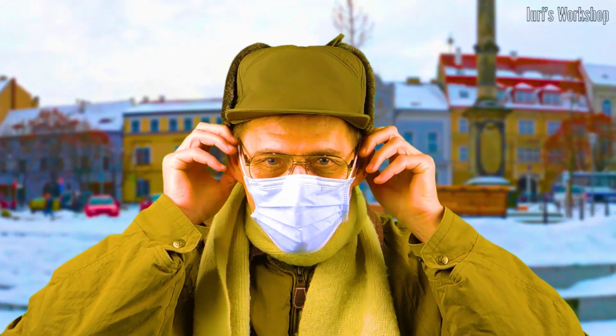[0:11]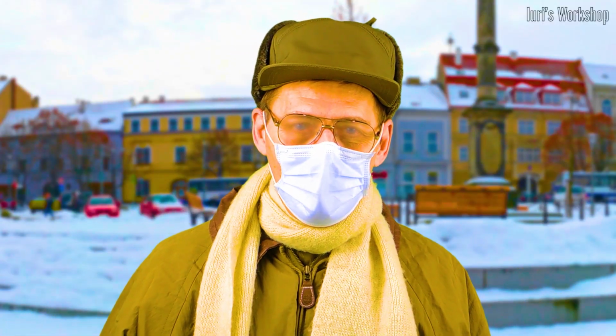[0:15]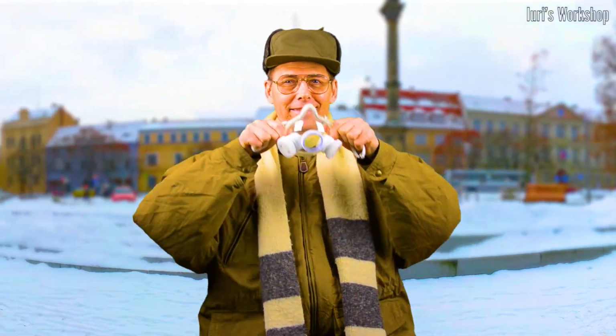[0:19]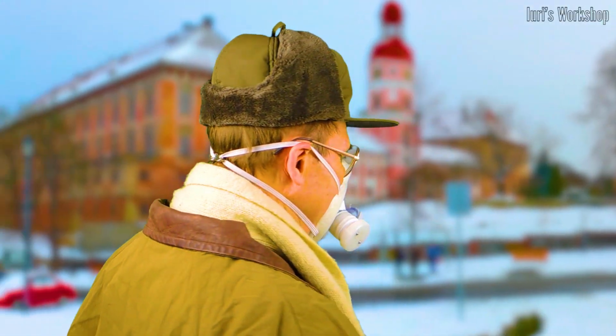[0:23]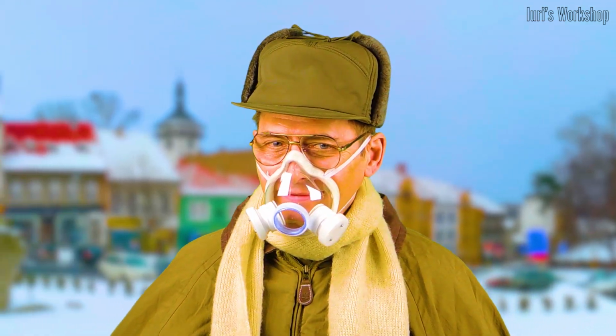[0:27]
The cold came, and all the shortcomings of the factory masks were immediately revealed. Firstly, the masks immediately began to condense moisture, and secondly, when using them, the lenses of the glasses began to fog up. Considering the above and the existing developments in the field of protective equipment, I have designed a respirator that is devoid of most of the known drawbacks.
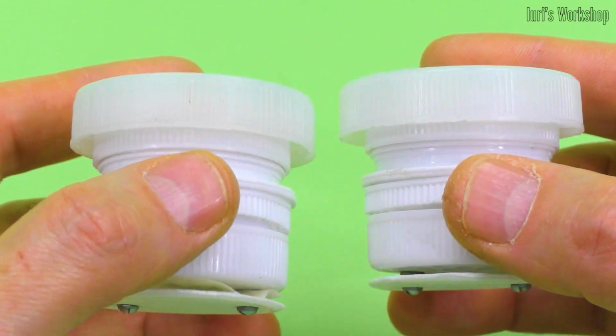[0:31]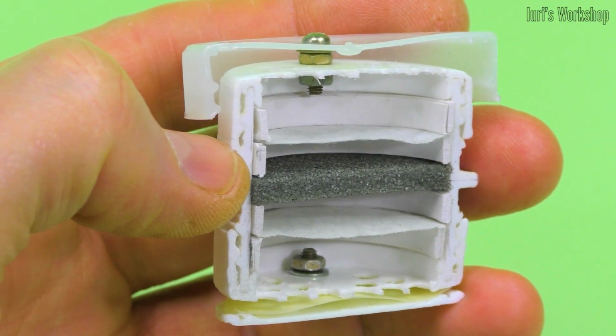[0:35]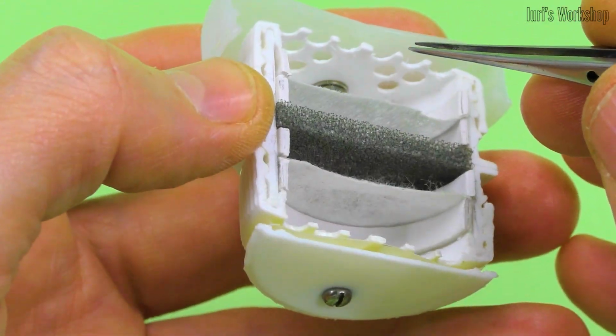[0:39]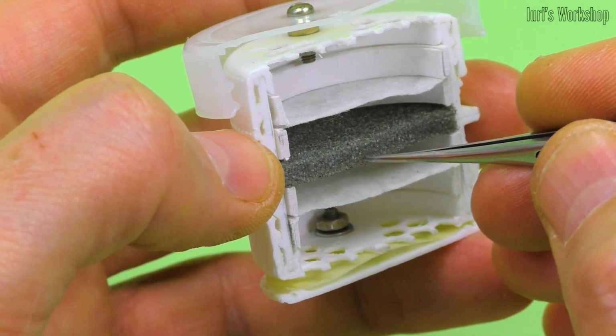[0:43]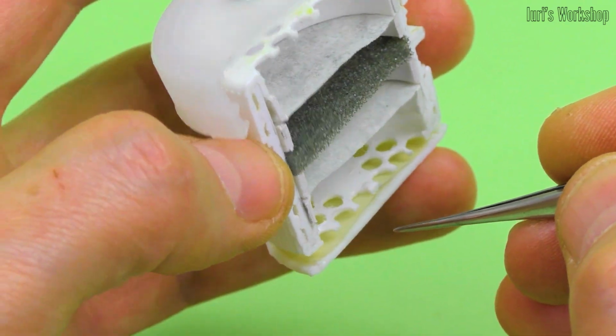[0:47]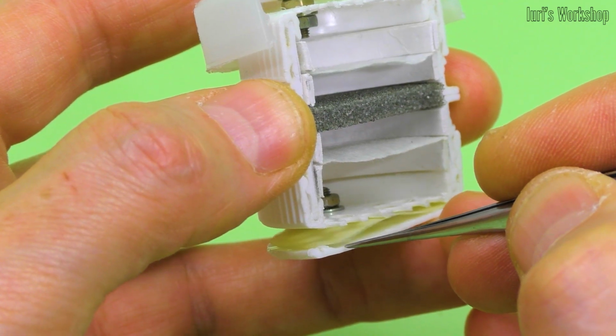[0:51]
The main difference between this respirator and my previous designs are these two cartridges. This is what the inhaled air cartridge looks like in a section. This is a splash cap. This is the first HEPA filter. This is a foam filter. And this is the second HEPA filter. The inlet valve membrane is located under the protective disc.
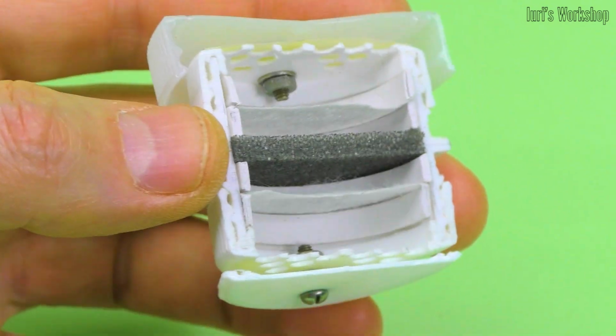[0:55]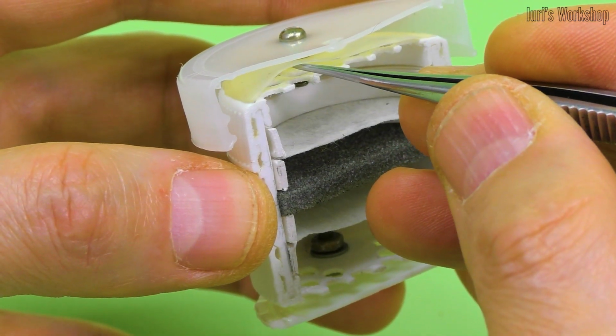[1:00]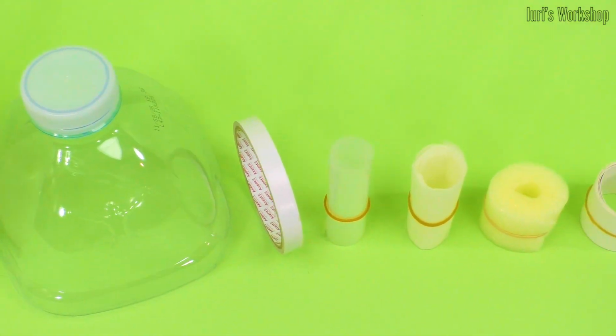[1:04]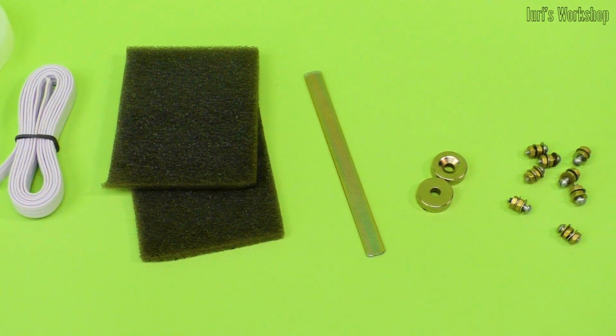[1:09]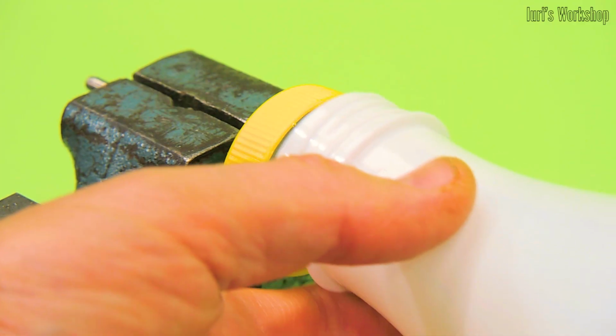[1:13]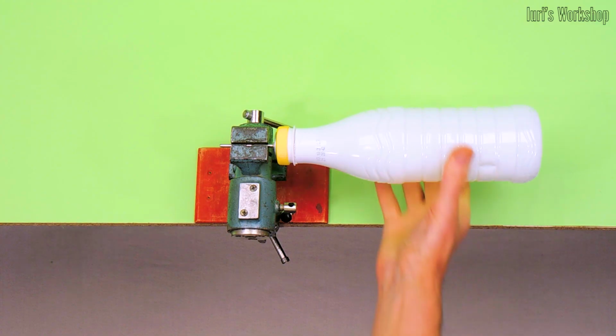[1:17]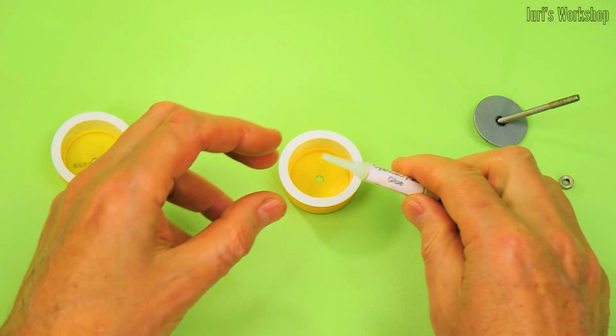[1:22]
The exhaled air cartridge differs only in the location of the membrane, which is located under the splash cap. A complete list of materials used and their sizes is in the description of this video. There you will also find a drawing of a template for making a valve. To make the cartridge bodies, I first cut off the threaded parts from the plastic milk bottles. Then I sanded the ends of the blanks and glued them with cyanoacrylate glue.
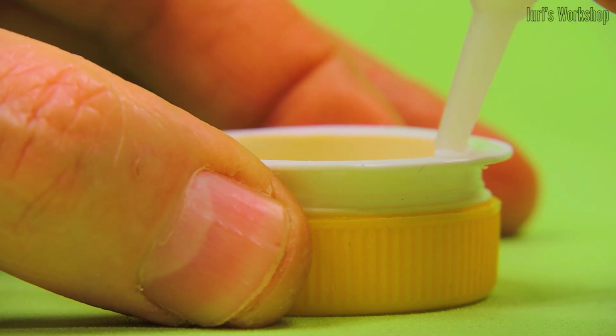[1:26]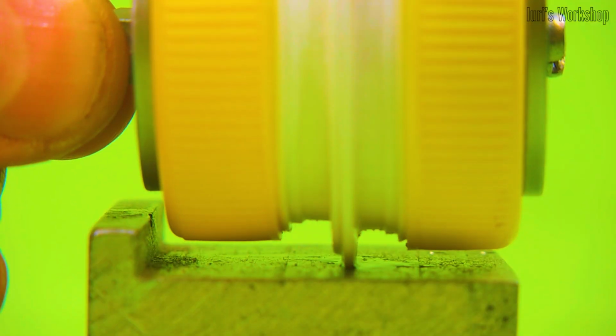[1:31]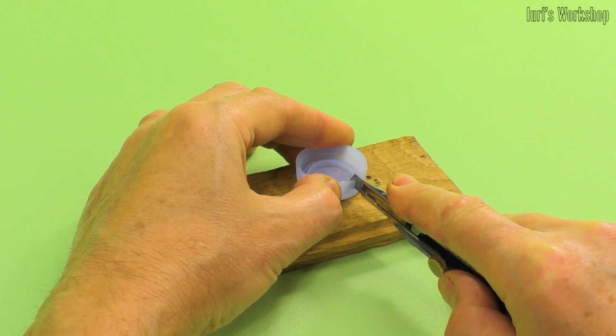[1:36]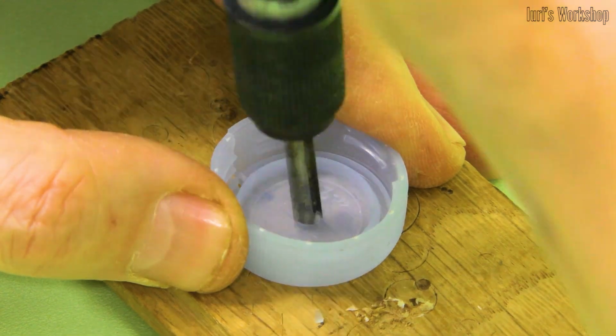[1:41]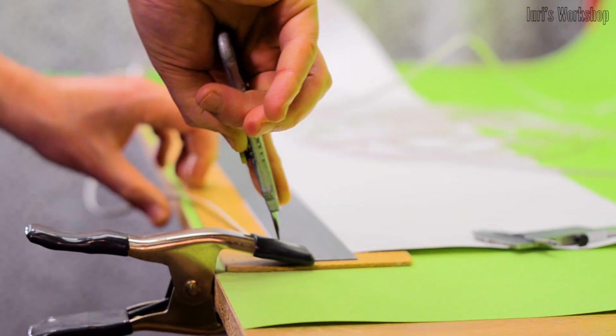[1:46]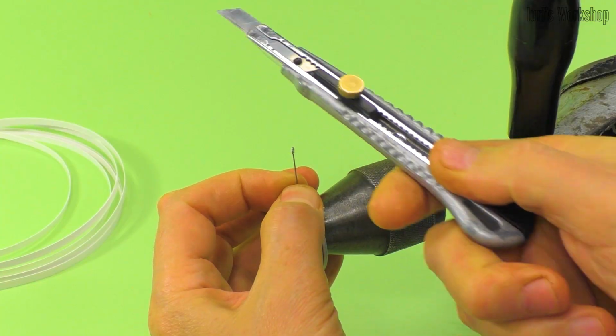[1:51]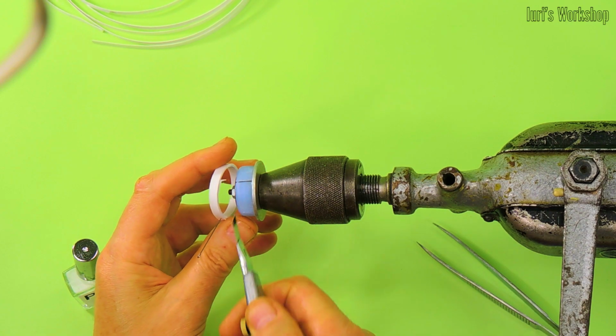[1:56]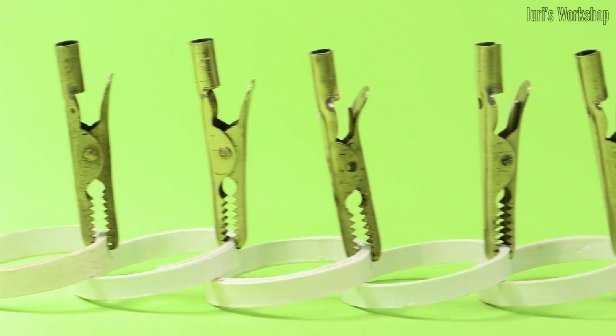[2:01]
During the curing of the glue, I placed the blanks under the press. I made a template for winding the fixing rings from a cork from a liter plastic bottle. By varying the length of the paper tape, you can precisely adjust the outer diameter of the retaining ring. To ensure the required strength and moisture protection, I impregnated the paper rings with PVA glue. At room temperature, the adhesive takes 24 hours to dry.
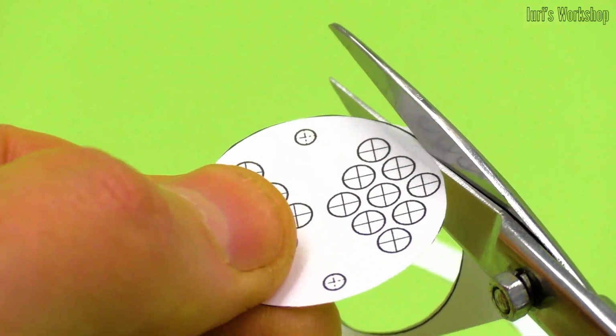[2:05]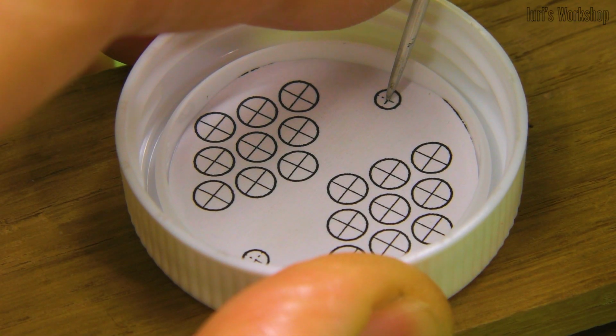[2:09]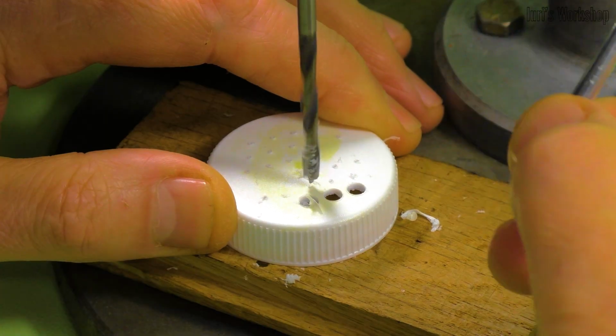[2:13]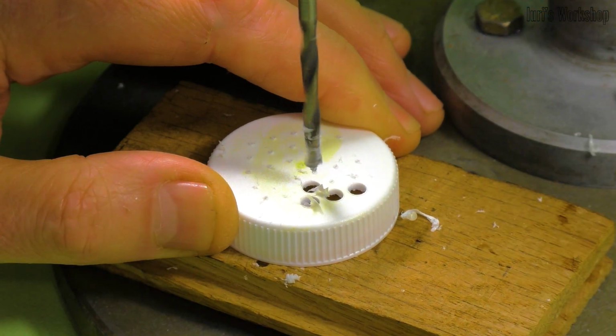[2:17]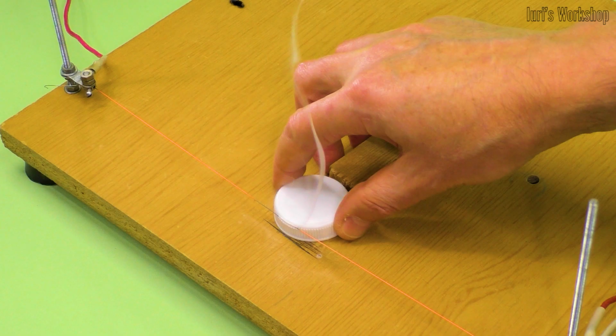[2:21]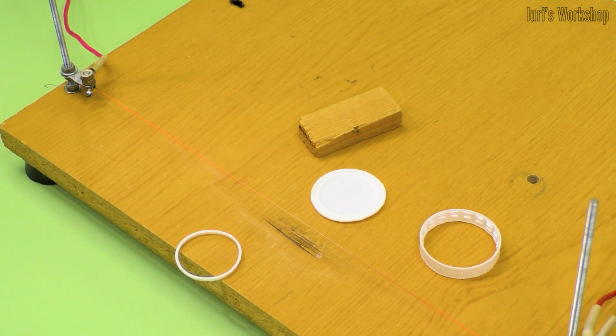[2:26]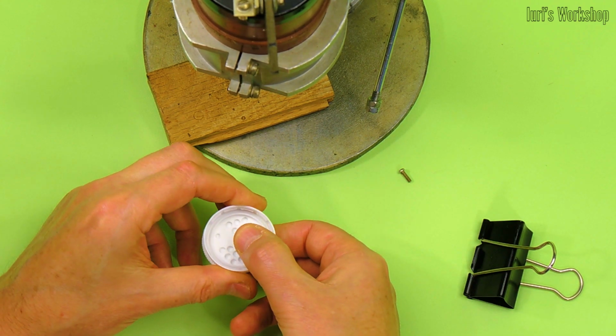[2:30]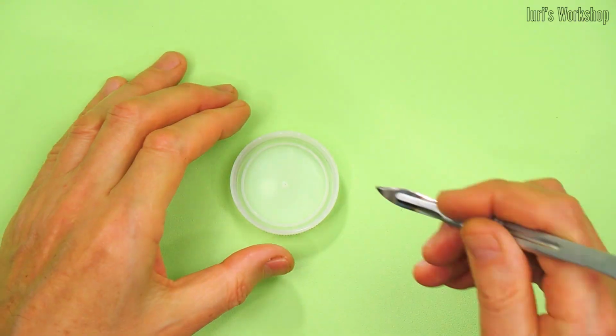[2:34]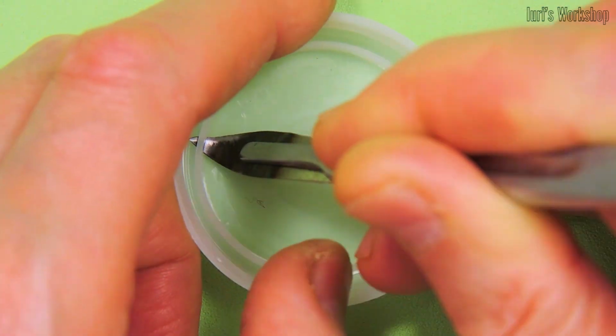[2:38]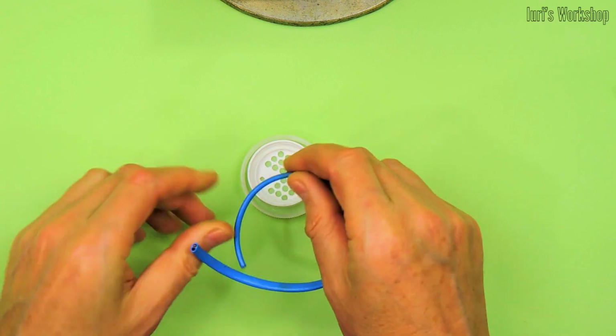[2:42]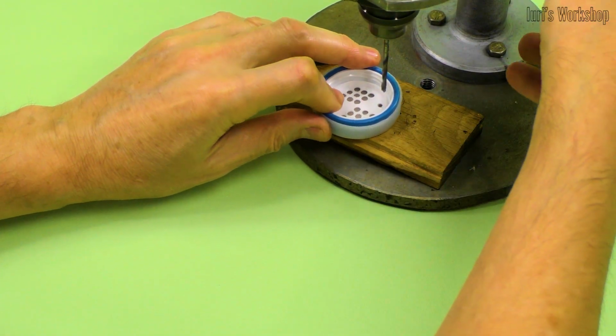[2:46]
I used a template from the printer to mark the holes in the milk bottle caps. You can use brad point drill bits to prevent large burrs. Even the smallest burrs should be removed though. This is a protective disc for the intake valve. The hole positions in this disc must match the holes in the cover. We can make the splash-proof cover of the outlet valve from a cap from a 5-liter plastic bottle. This cap also requires coaxial mounting holes.
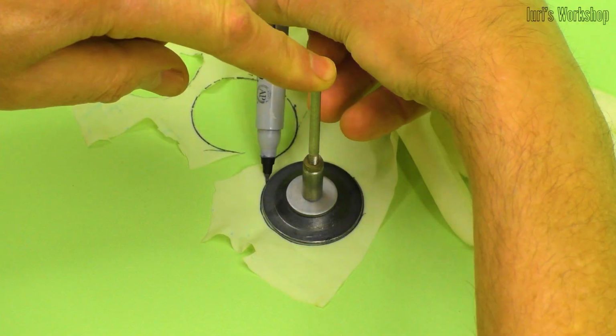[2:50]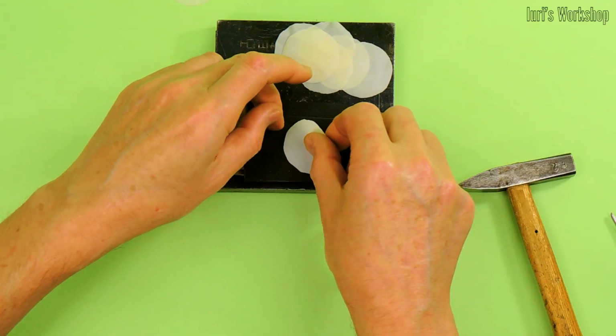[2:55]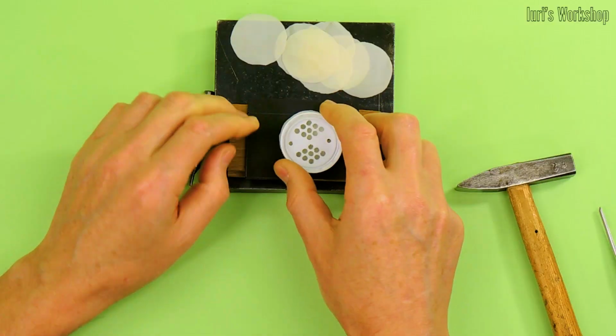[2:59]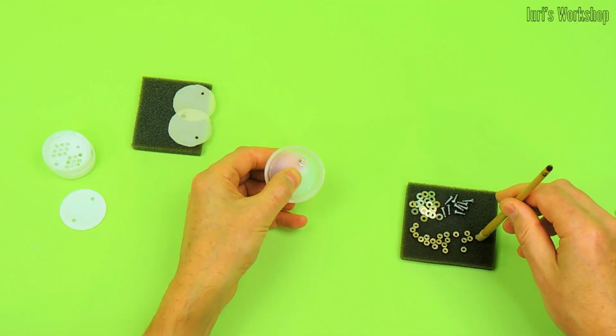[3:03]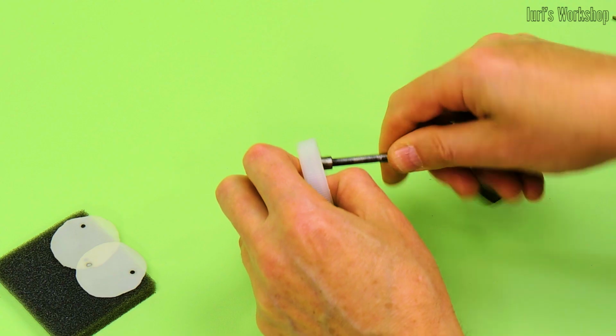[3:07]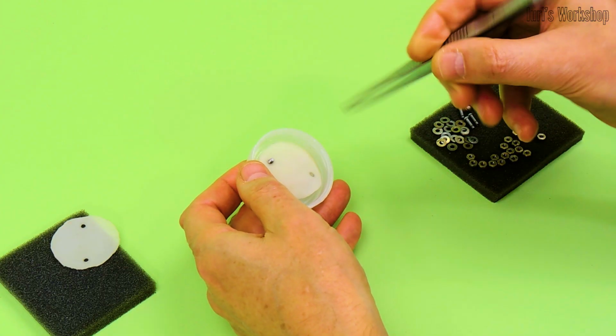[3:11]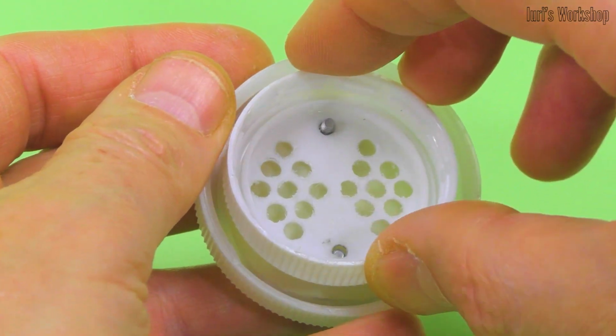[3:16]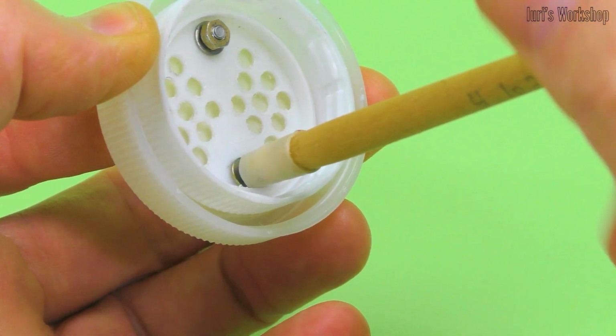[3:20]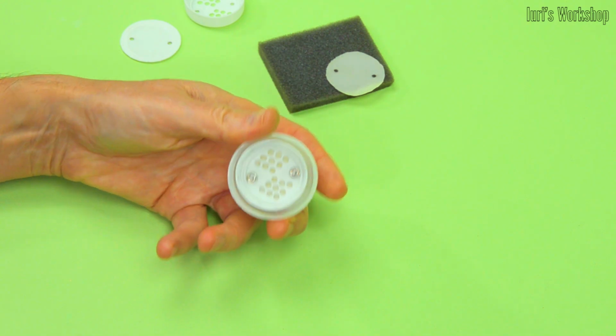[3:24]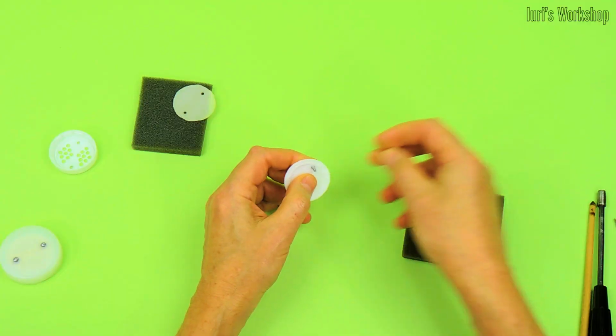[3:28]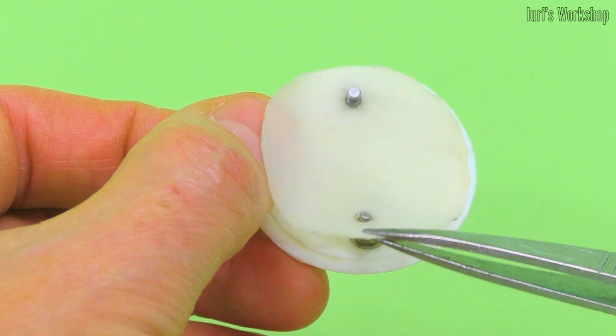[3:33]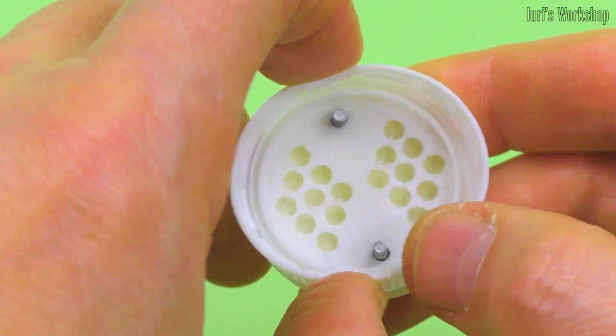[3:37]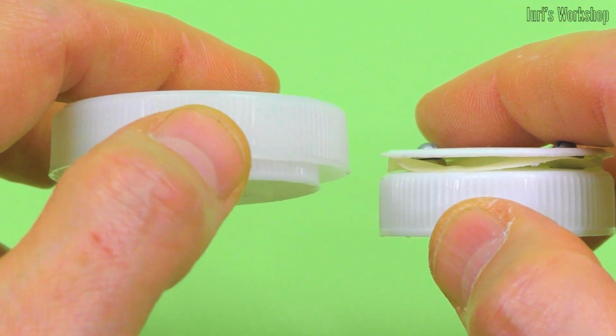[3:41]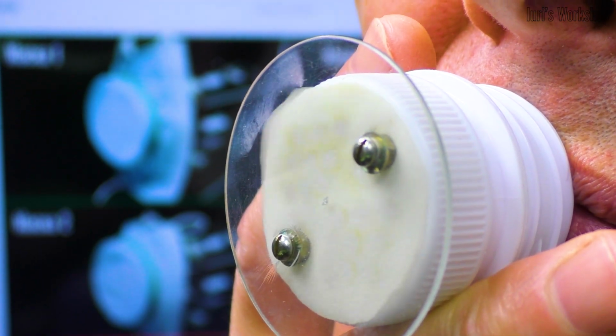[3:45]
I made the valve membranes from a smooth surgical glove. Now you can see the process of assembling the exhaust valve through which the exhaled air passes. For assembly, I used screws with a diameter of 2.5 millimeters. But you can choose the screws at your disposal. And this is the intake valve assembly. The inhaled air passes through it. As you can see, the valves differ only in the presence of a splash-proof cover. This is how these valves work.
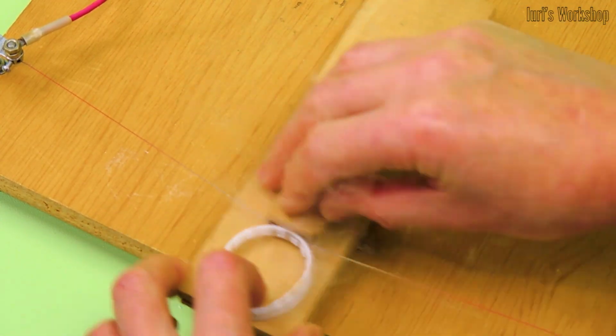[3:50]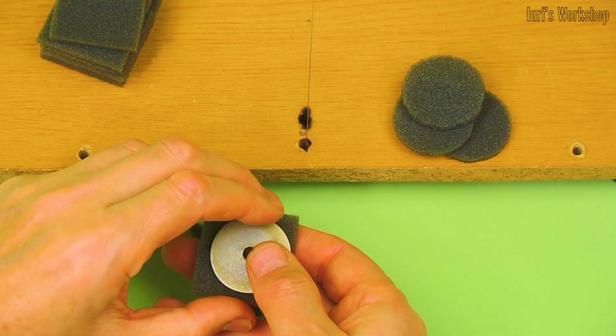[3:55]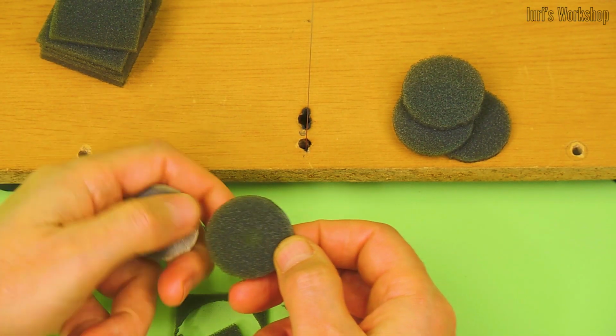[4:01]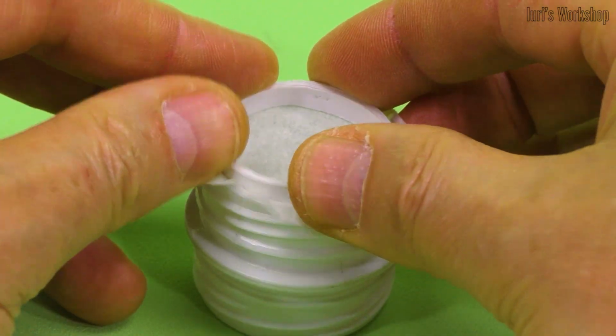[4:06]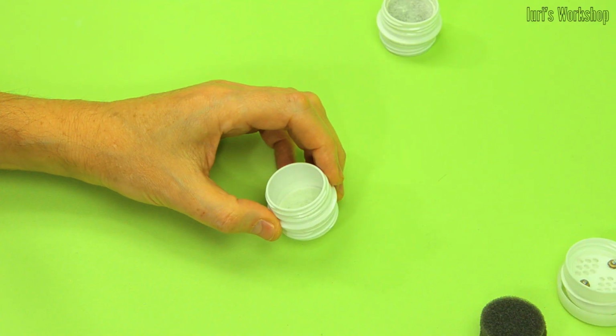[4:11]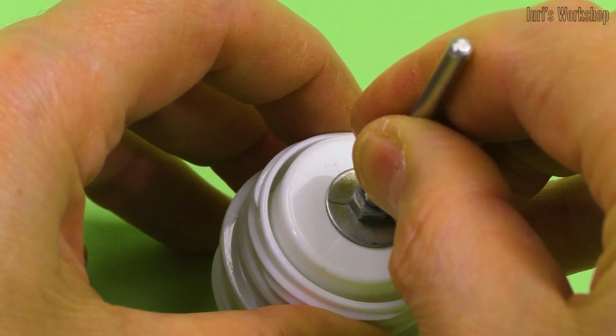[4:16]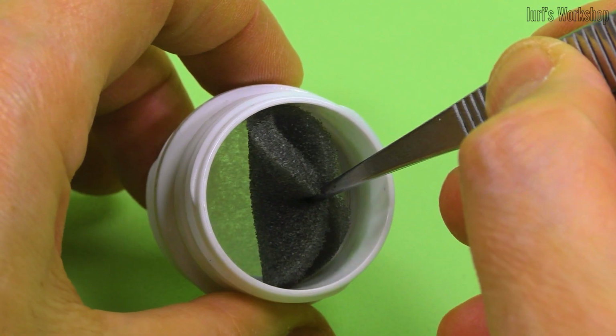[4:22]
This ring serves to increase the reliability of fastening the cartridge to the respirator body. This is how you can resize the foam filters. Let's proceed to the final assembly of the cartridges. We fix the first HEPA filter with a paper ring. This design of the cartridge makes it easy to change filters and disinfect. With the help of two more of the same rings, we fix the foam filter.
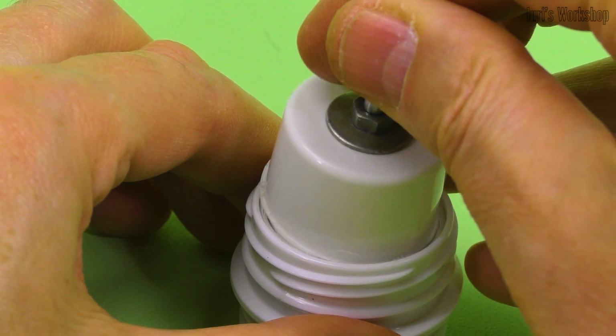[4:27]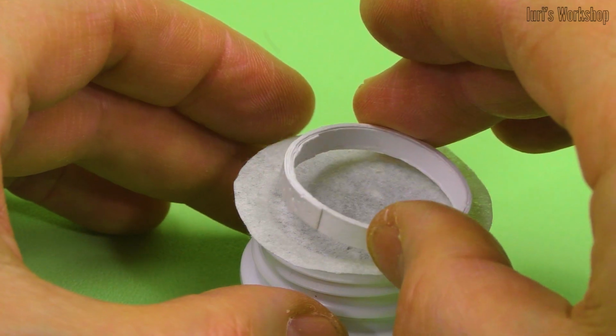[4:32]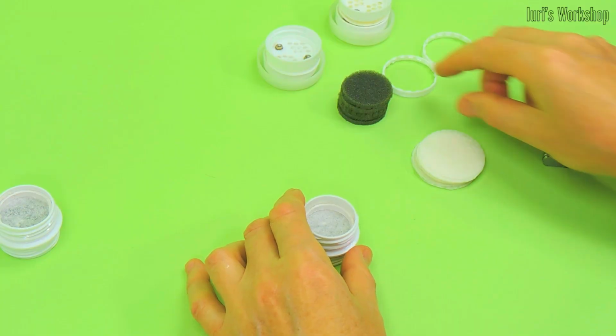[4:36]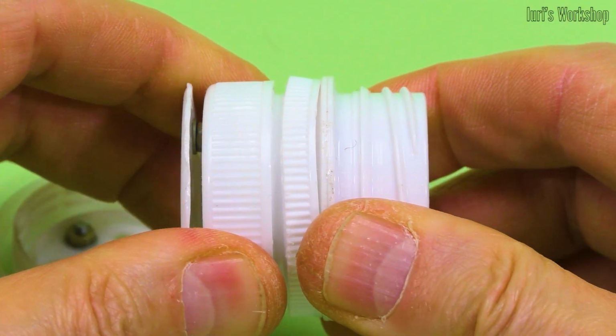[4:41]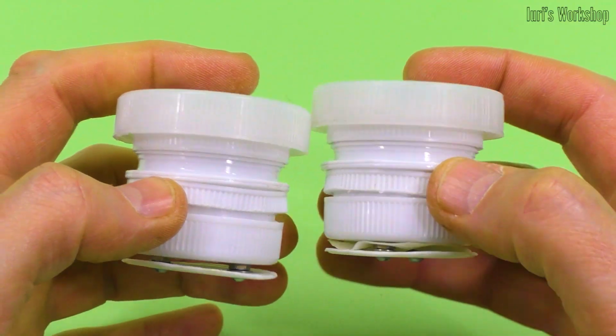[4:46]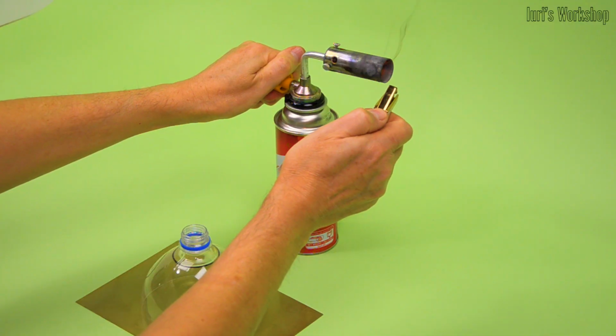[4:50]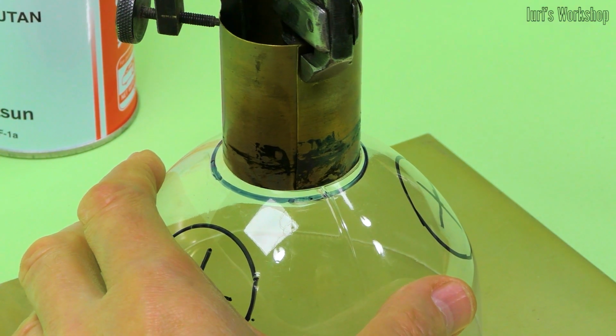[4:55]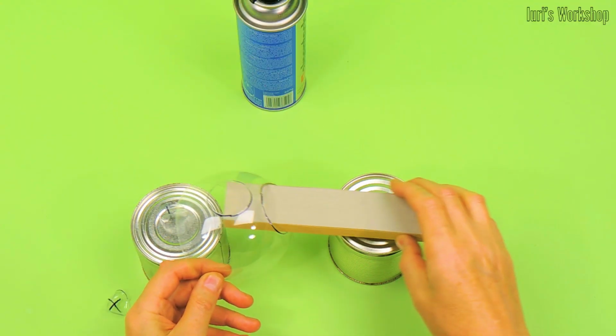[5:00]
And in the end, we can install another HEPA filter. Although in an exhalation cartridge, it is possible to reduce the number of filters to 2 by removing one of the HEPA filters. After installing the grids and valves, the cartridges are ready for use. I made the respirator body from a 3-liter plastic water bottle. I melted the holes for the sound membrane and cartridges using preheated thin-walled tubes.
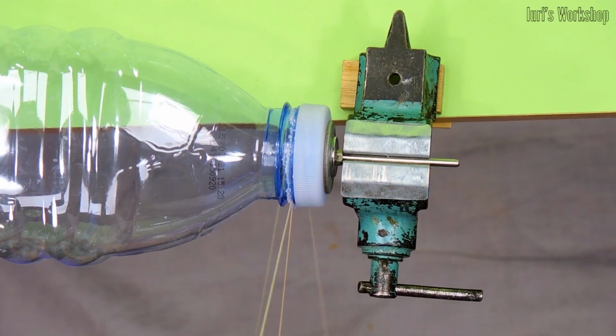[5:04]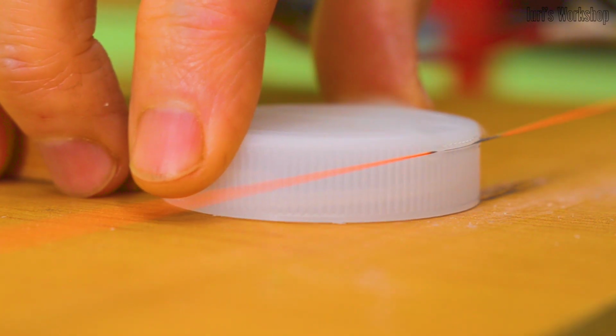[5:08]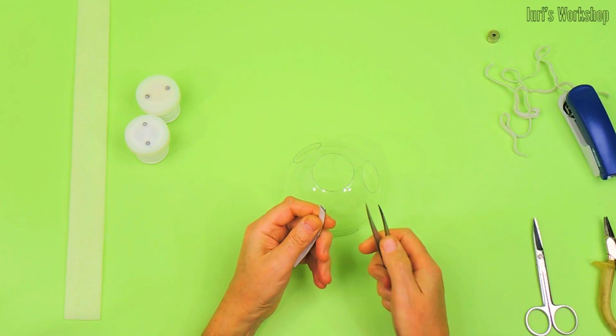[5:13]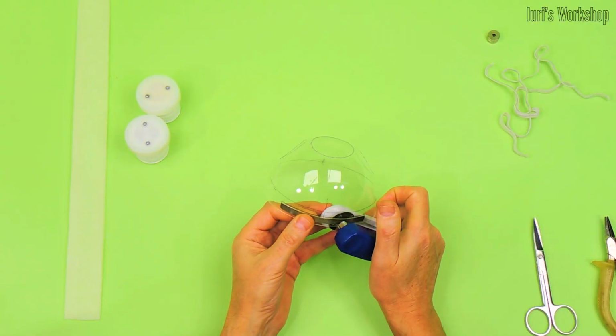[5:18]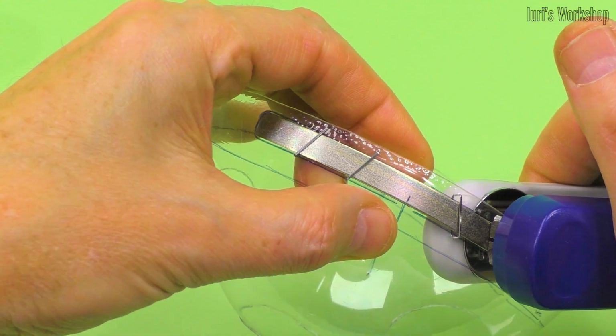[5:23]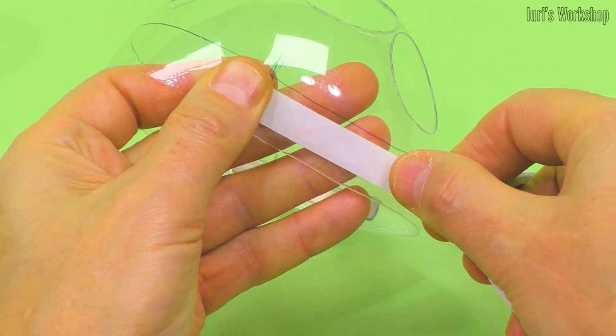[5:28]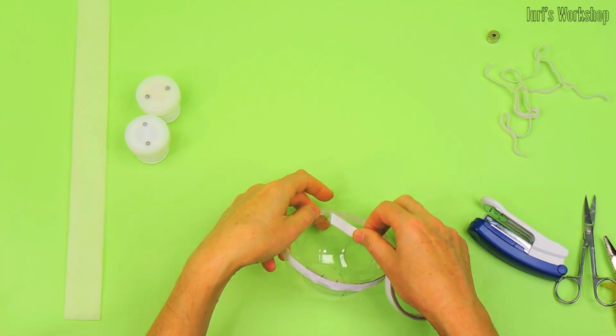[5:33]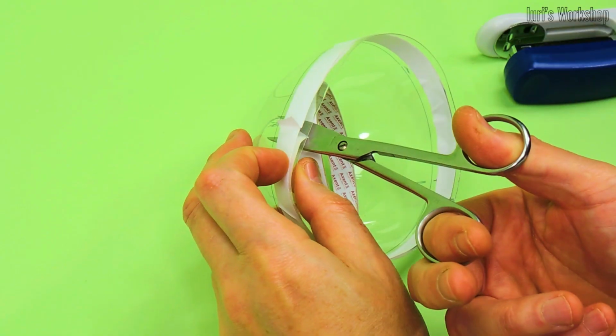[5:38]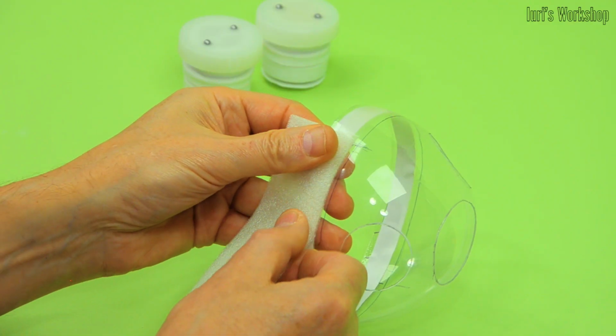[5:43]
I used the cap and thread from a 6-liter plastic bottle to attach the sound membrane. This steel plate allows you to adjust the shape of the respirator for the best fit to the nose. I used a stapler to further secure this plate. I fixed the polyethylene foam pad with double-sided tape. This elastic pad ensures a secure fit of the respirator body to the face.
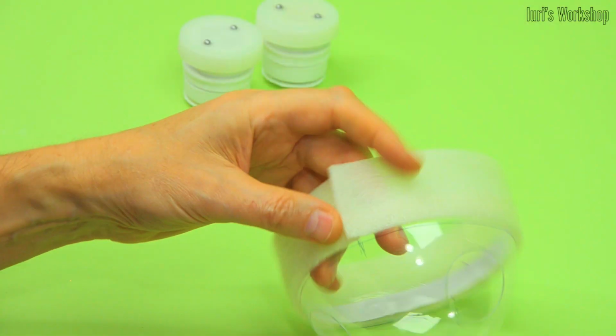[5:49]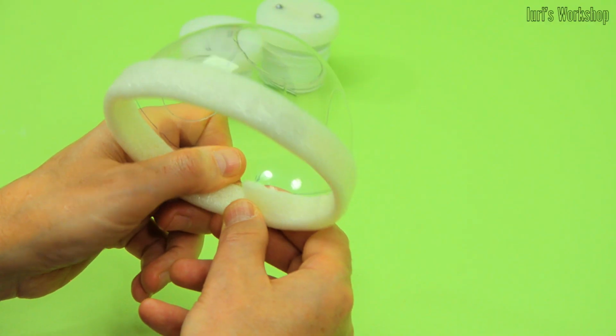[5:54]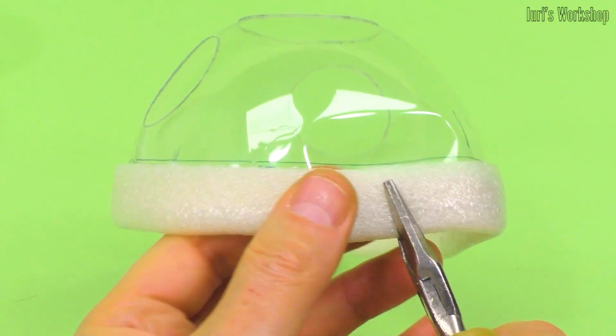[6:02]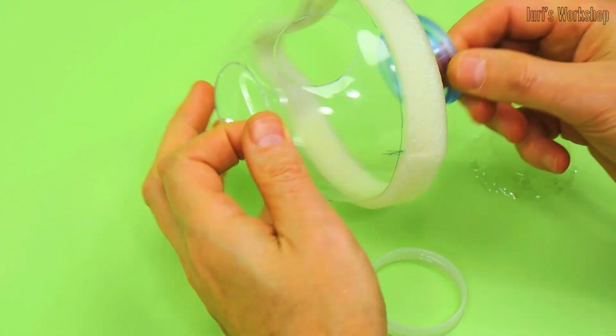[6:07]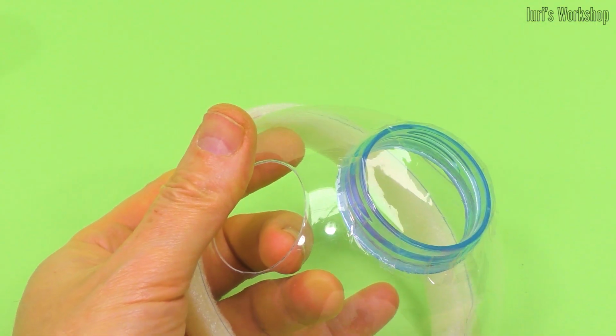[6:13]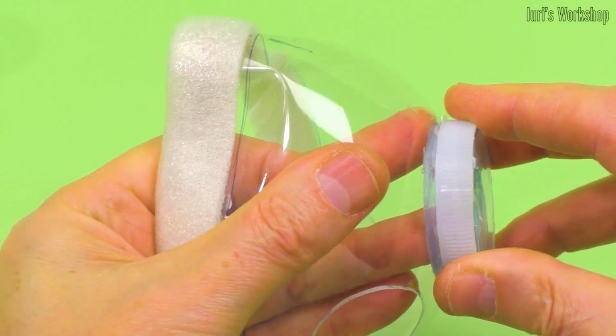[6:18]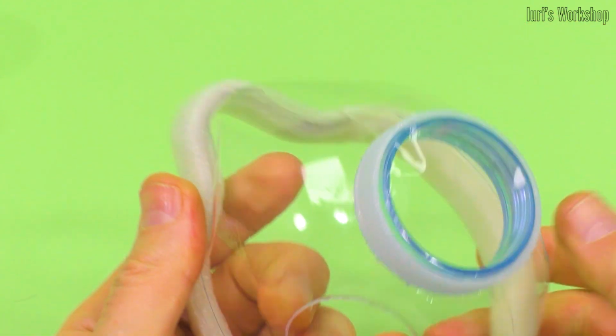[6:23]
It is necessary to cut off the gasket with a certain margin so that a gap does not form at the junction. You can adjust the shape of the respirator in the same way as the shape of a regular face shield. I used a silicone sealant to seal the sound membrane mouth. It retains its elasticity even after curing. Polypropylene membrane provides high-frequency sound transmission and significantly improves speech intelligibility.
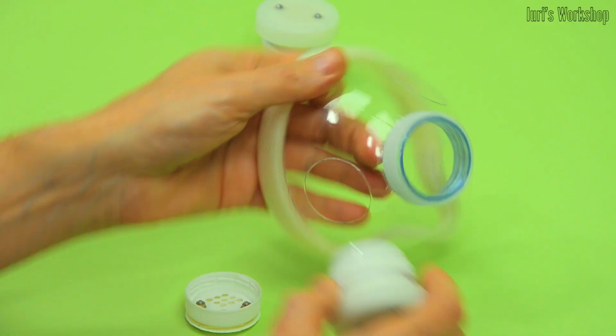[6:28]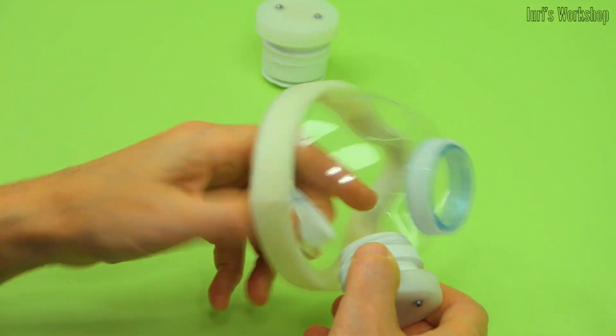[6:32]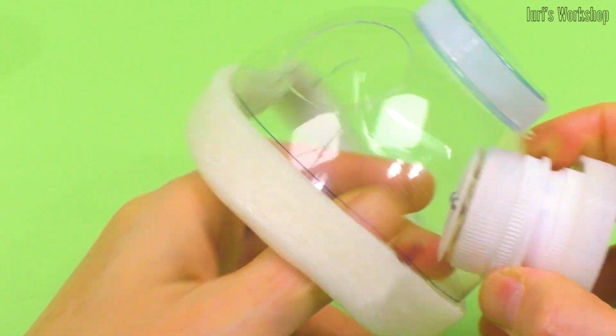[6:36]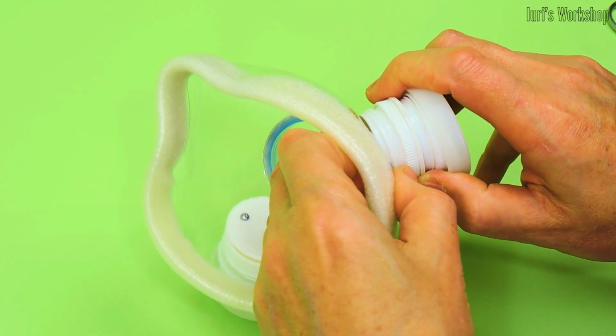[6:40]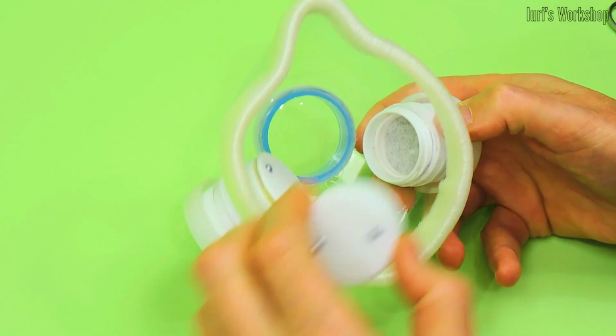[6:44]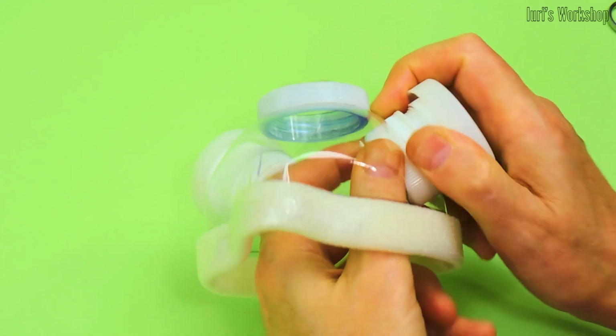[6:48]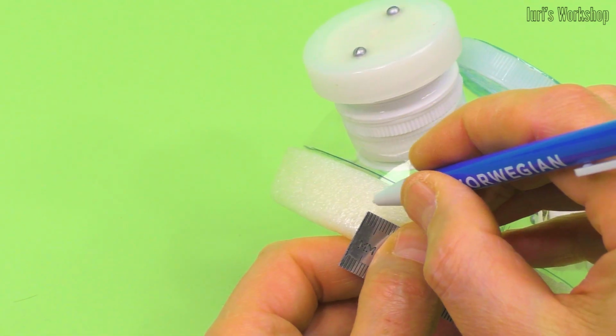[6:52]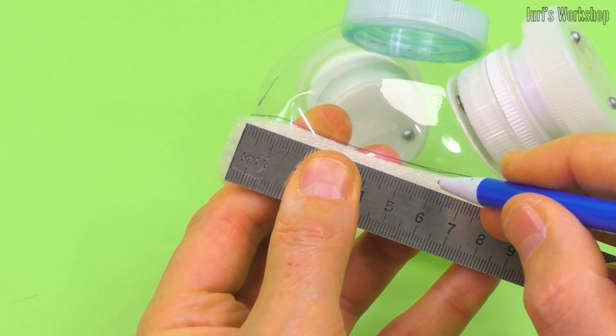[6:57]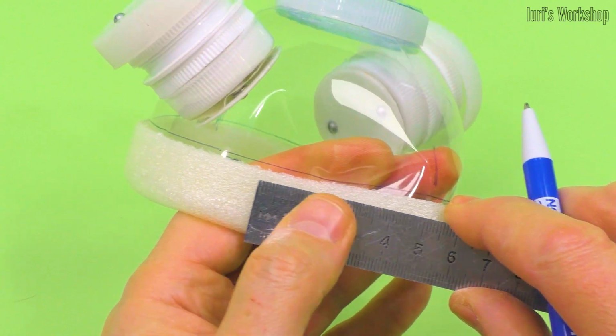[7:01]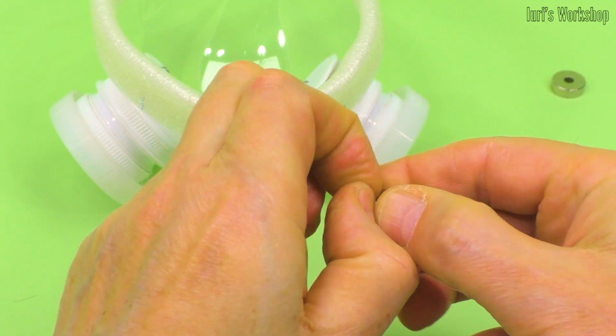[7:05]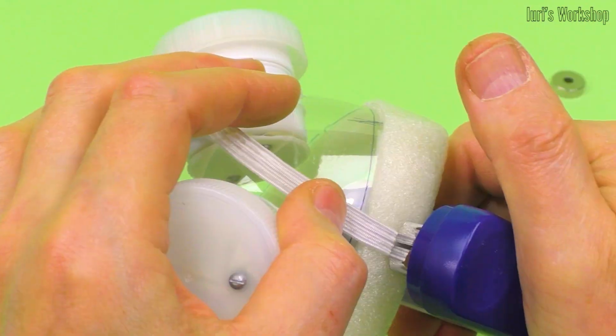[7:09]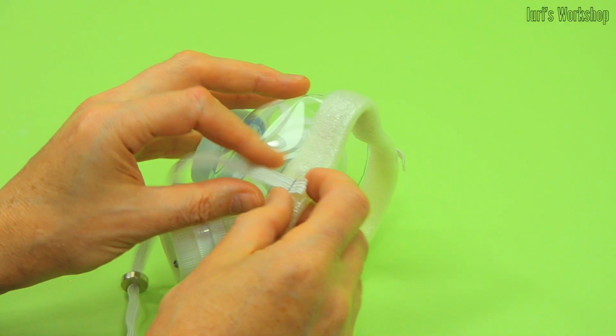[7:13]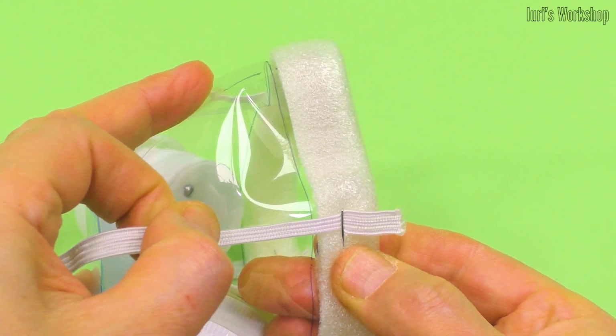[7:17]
Mounting and dismantling cartridges is not a big hassle. So it is advisable to change the filters at least once a day and disinfect all surfaces with ethyl alcohol. And this is how I mark the places where the elastic bands are attached. Neodymium magnets make the mask easy to operate. And this attachment allows you to easily adjust the tension of the elastic bands.
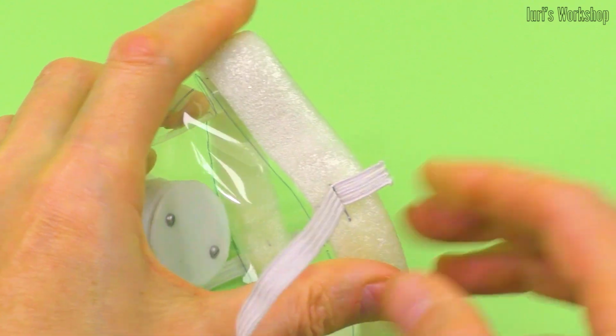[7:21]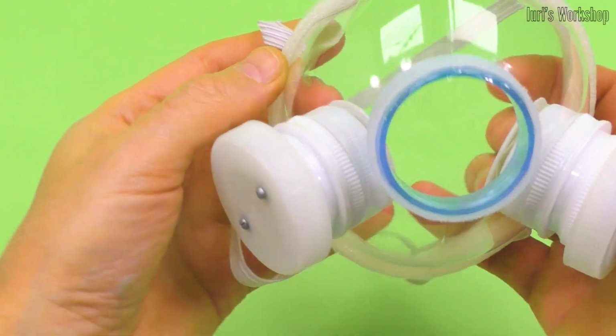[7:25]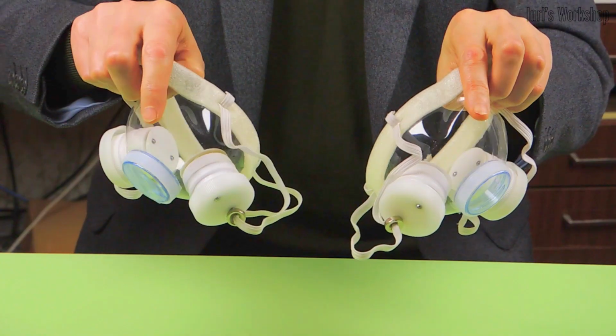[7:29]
These are the respirators I make for my family.